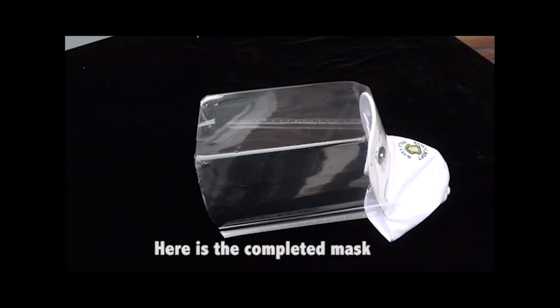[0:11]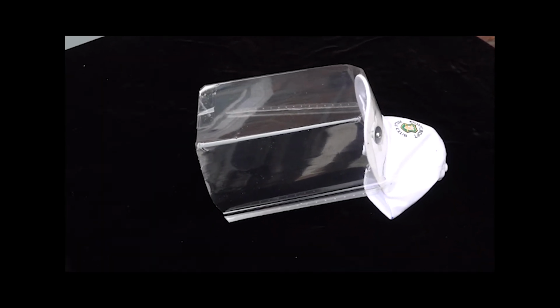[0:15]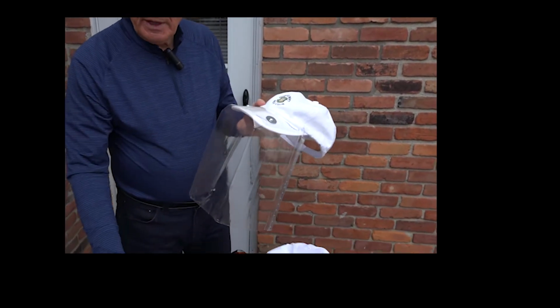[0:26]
Today I'd like to share with you how I made this face shield from a basic product from Costco, which happens to be a spinach box. This is a spinach box, okay?
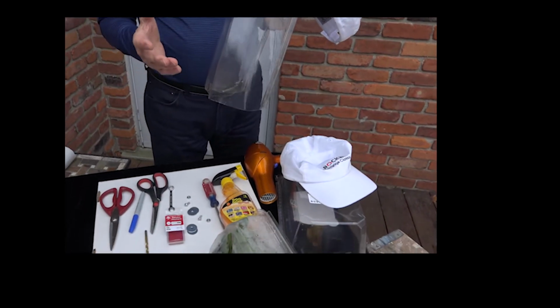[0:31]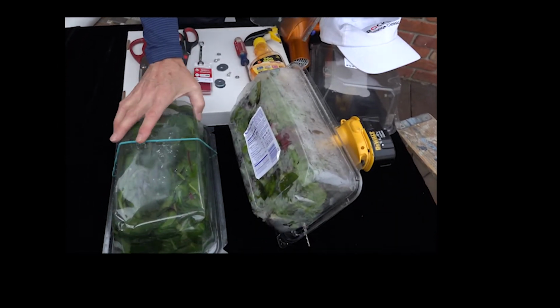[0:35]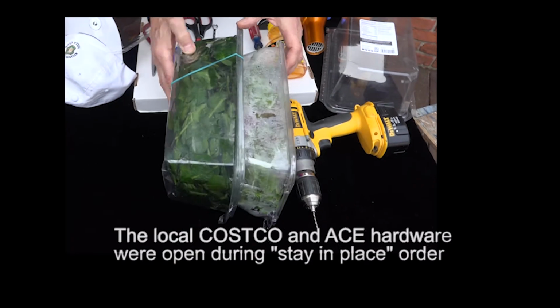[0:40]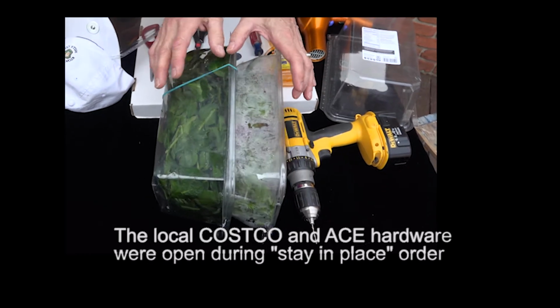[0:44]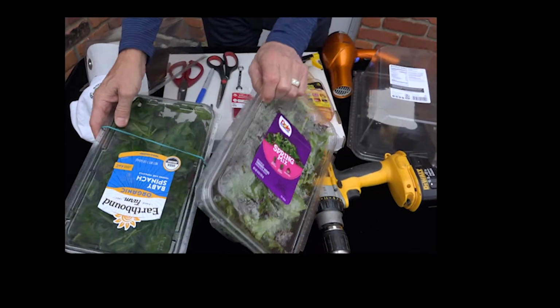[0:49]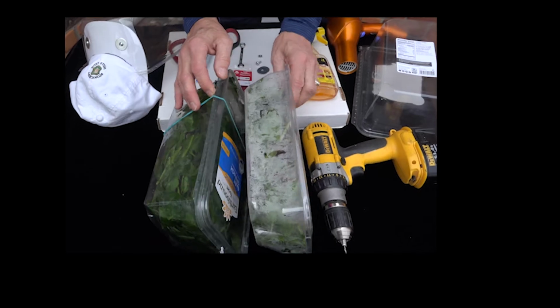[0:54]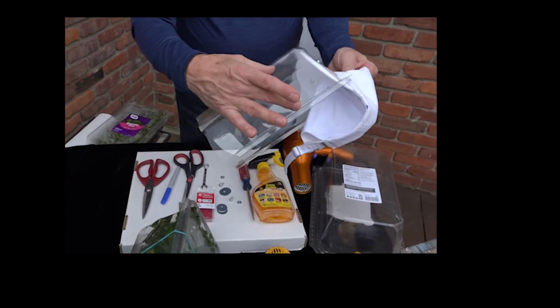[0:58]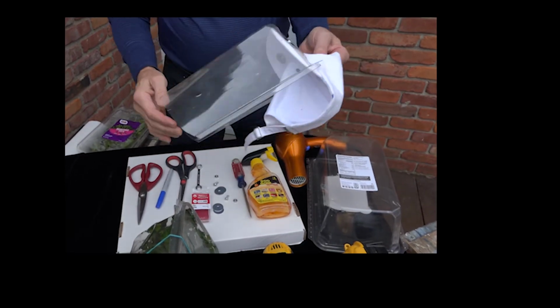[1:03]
Now, when you go to the store to buy the box, what's singly most important is the depth of the box, okay? So we want to get a box that's very, very deep. You do not want a shallow box depth-wise here. You want to get a minimum of 4 to 5 inches on the side profile. So you want to eliminate this. Even though the top profiles look the same, the side profile is what's most important. So we'll eliminate this because it is this part that's also very, very important. We want to get this close to back to the ear as possible.
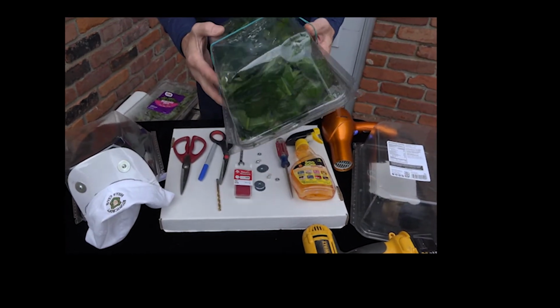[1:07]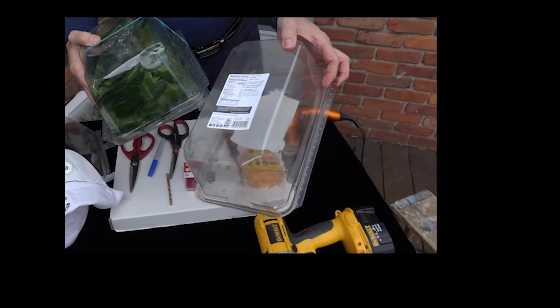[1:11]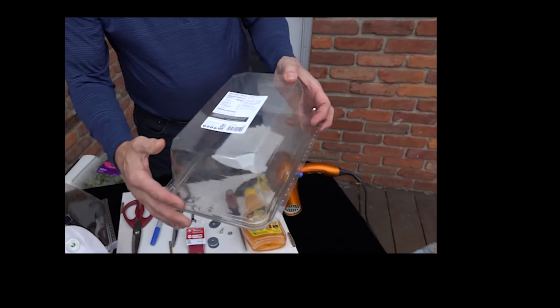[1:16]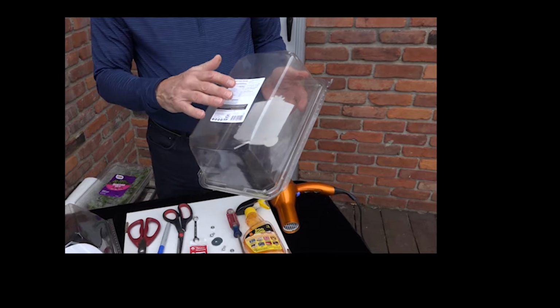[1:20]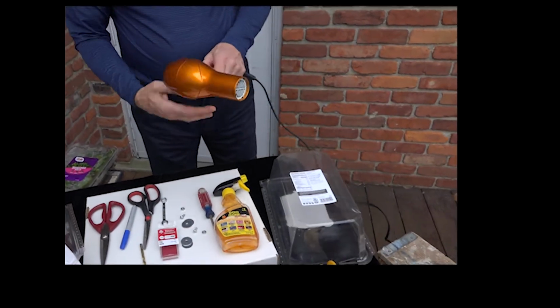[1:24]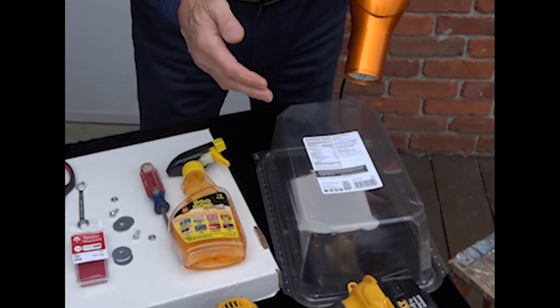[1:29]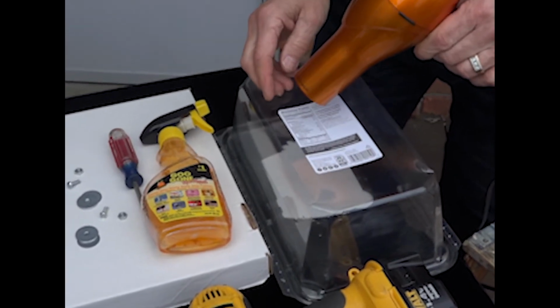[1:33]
So once we have this box, the first step is going to be removing the label that's on the back, okay? This is very, very critical. This is the really most important thing to do, and you have to be very careful to not scratch it. Because if you scratch it, obviously you've ruined the whole process. So it's very simple to do. You take a hair dryer and you heat one of the corners up. And you pull it away.
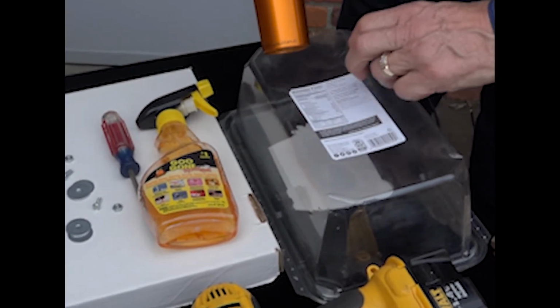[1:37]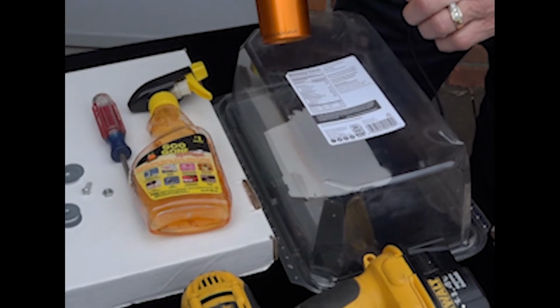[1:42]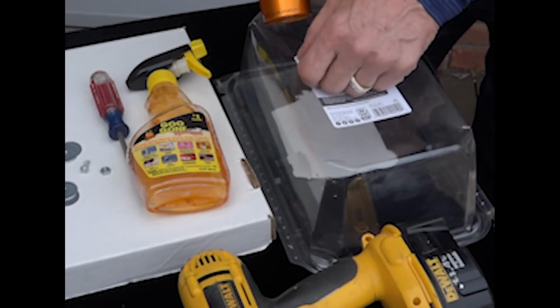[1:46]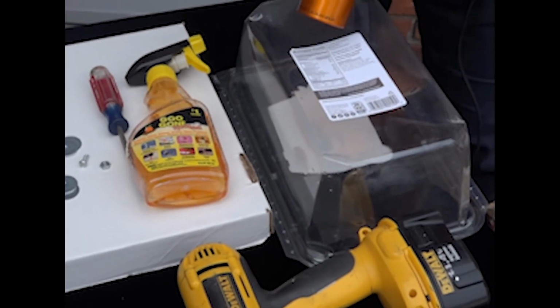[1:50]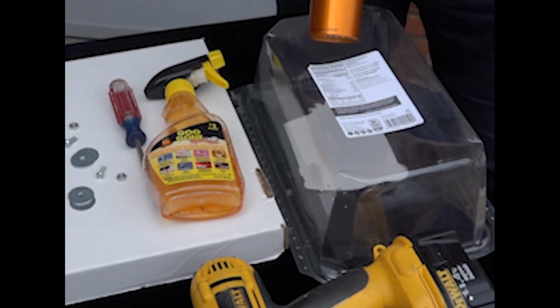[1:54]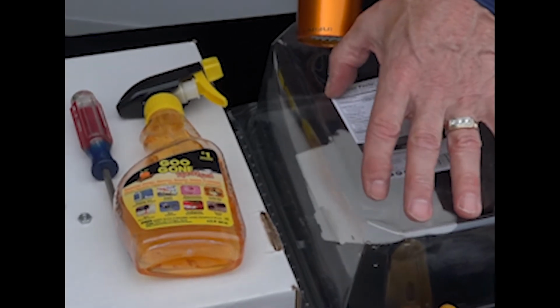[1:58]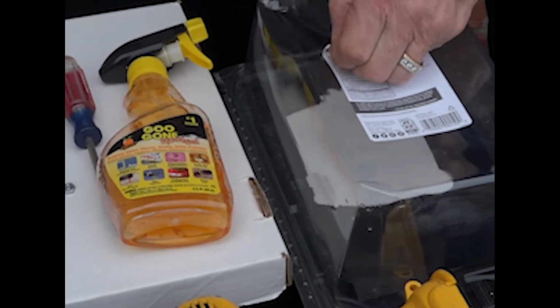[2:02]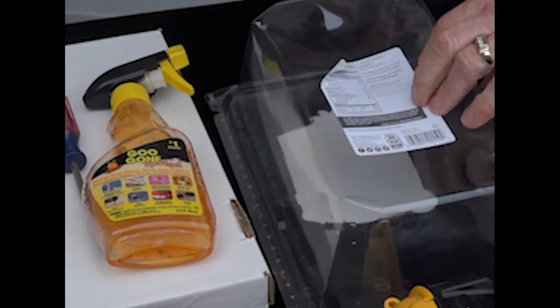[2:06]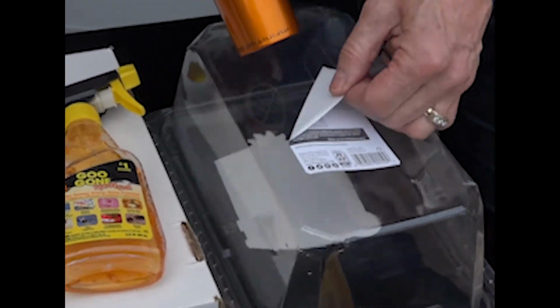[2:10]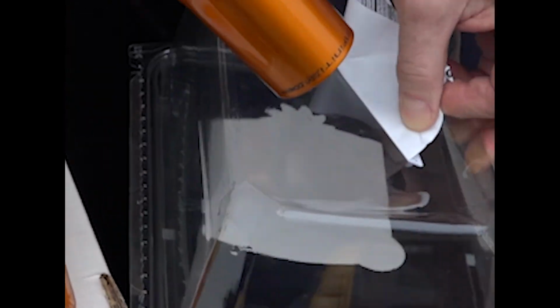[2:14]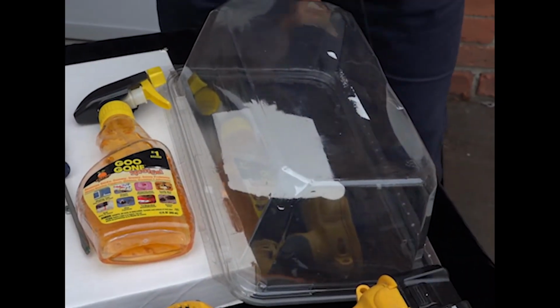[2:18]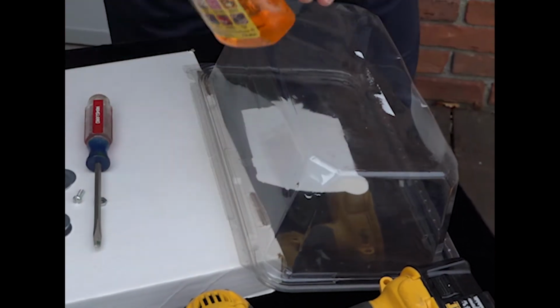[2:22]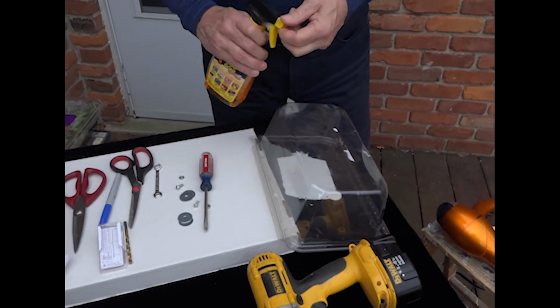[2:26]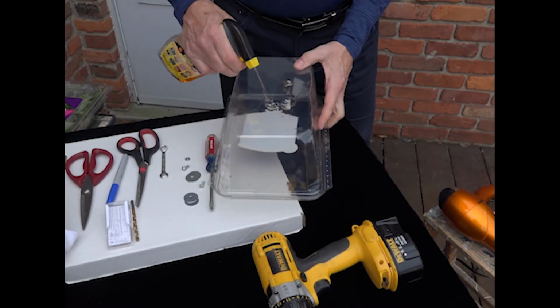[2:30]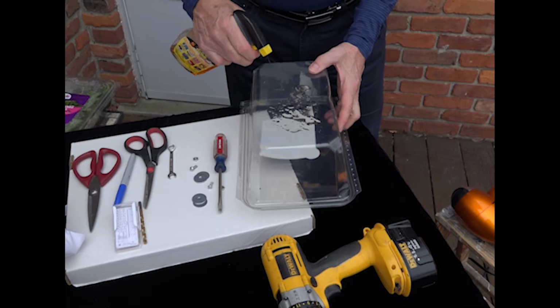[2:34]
It may take a minute before it starts to come off. You do not want to have it on high heat, have it on medium heat. So as you can see, it starts to come out, okay? And you want to take this off. So now there may be some excessive stuff that did not come off. I just used some Goo Gone, spray it on, let it sit for a minute or two, go back over the whole area to make sure you got all the glue off.
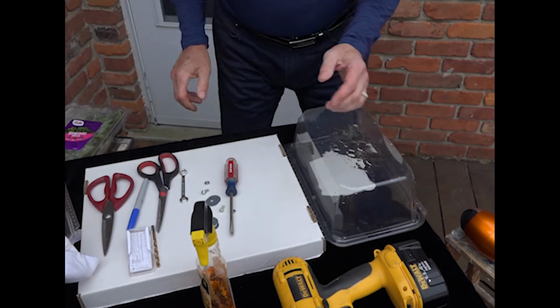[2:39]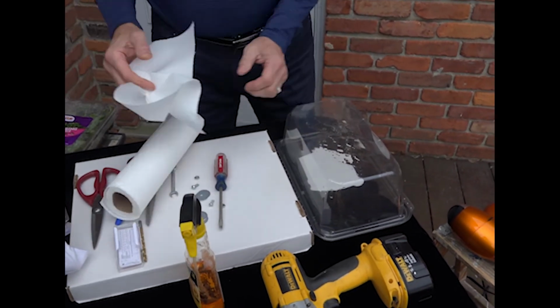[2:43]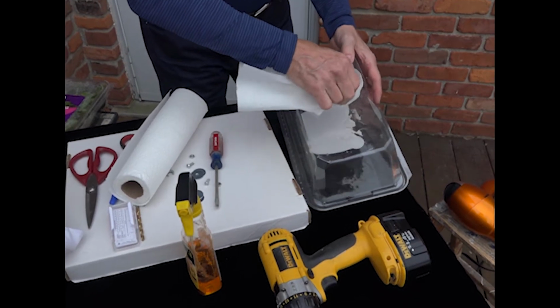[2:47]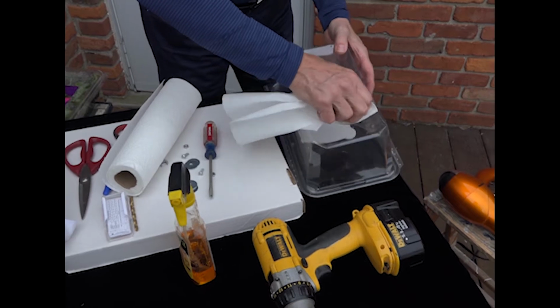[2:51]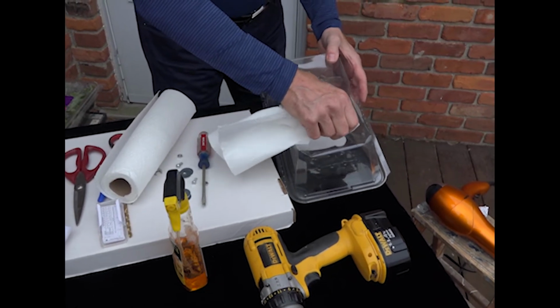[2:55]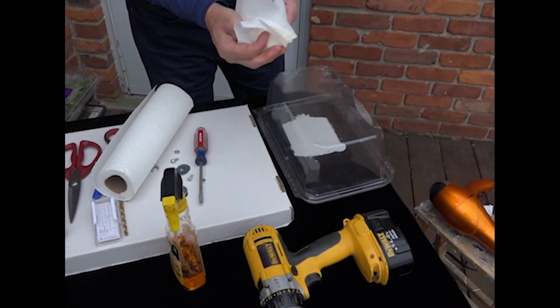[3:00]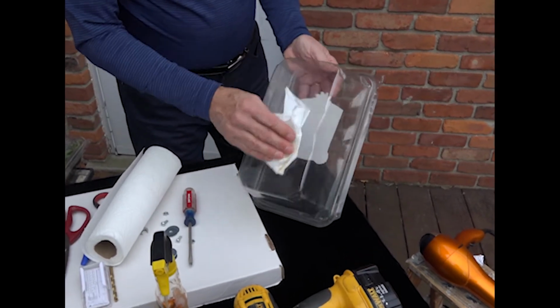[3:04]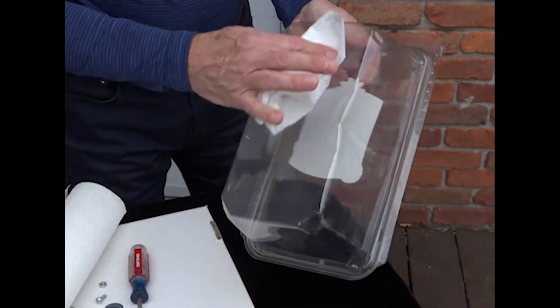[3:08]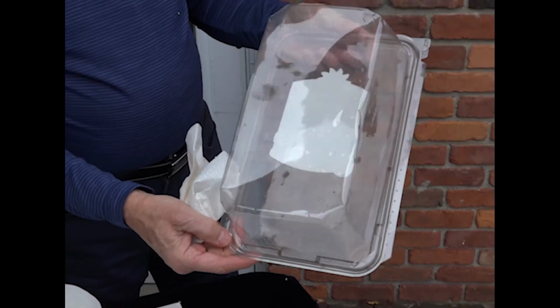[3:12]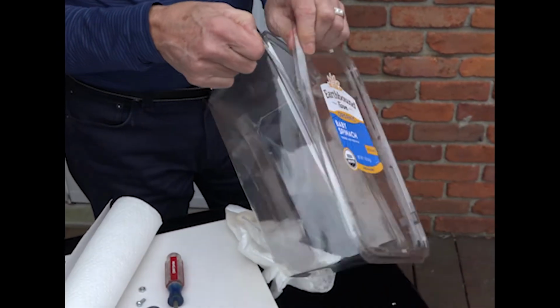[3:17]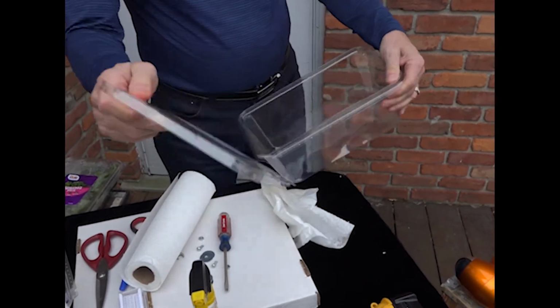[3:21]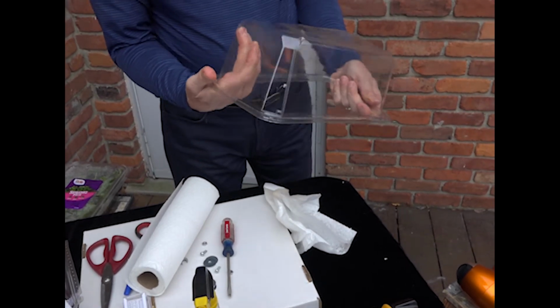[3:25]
Take a paper towel, rub this down, take your fingernail, remove what's there, the excess. The glue is still going to be there in some cases, and the Goo Gone will help it. This is the single most important part, because without this, you're going to scratch it, and you do not want to scratch it, okay? So as you can see, there are no scratches in this. It'll be very, very good to use. Now, you just take the unit apart, discard that. Now we have the beginning stages of our shield.
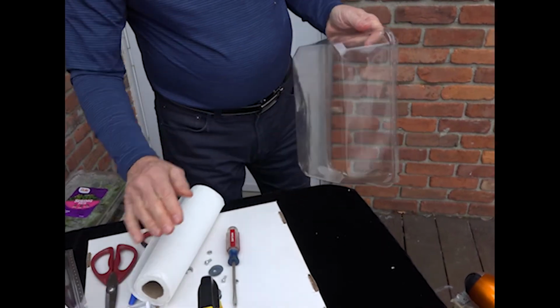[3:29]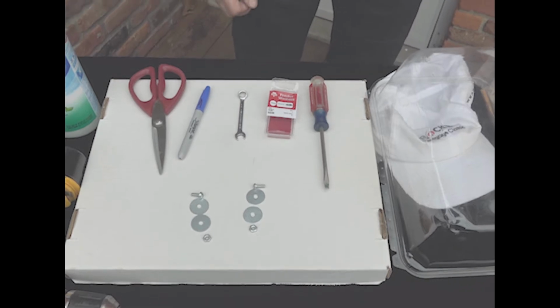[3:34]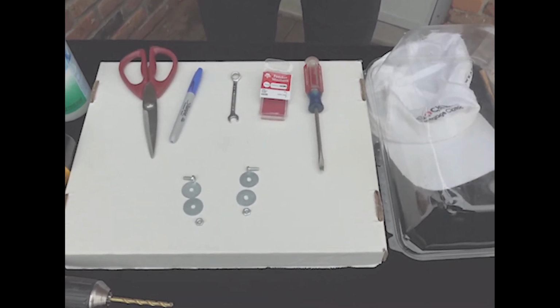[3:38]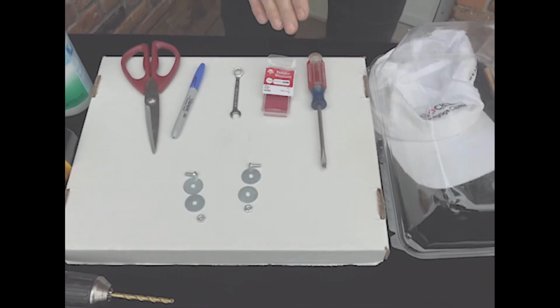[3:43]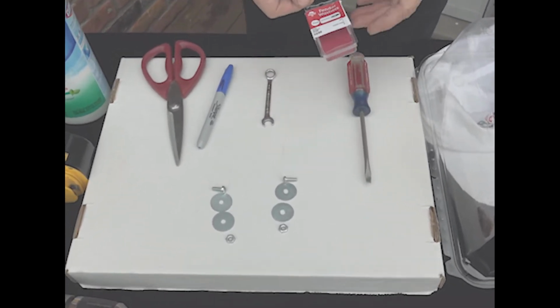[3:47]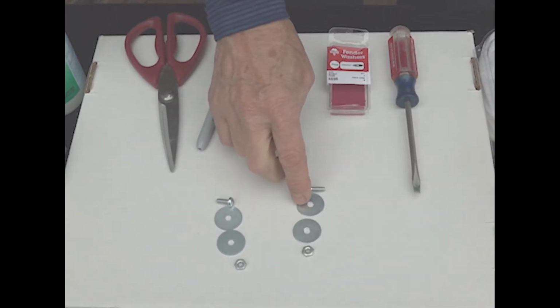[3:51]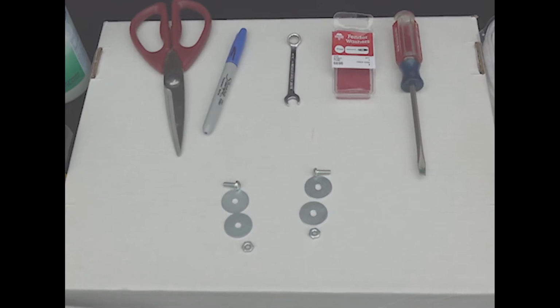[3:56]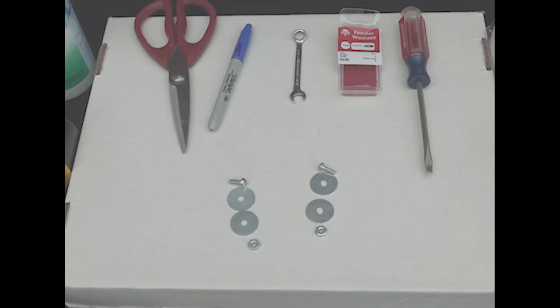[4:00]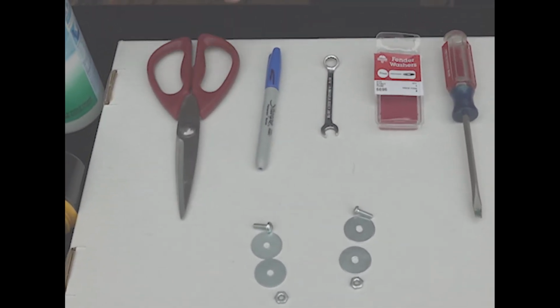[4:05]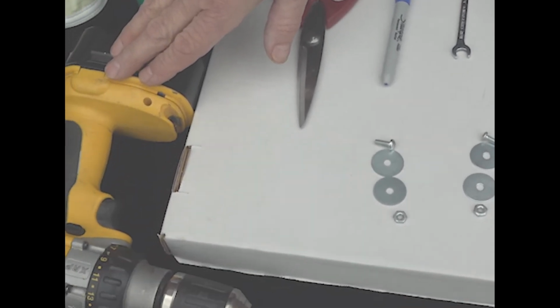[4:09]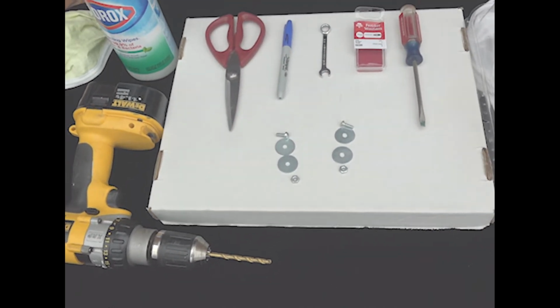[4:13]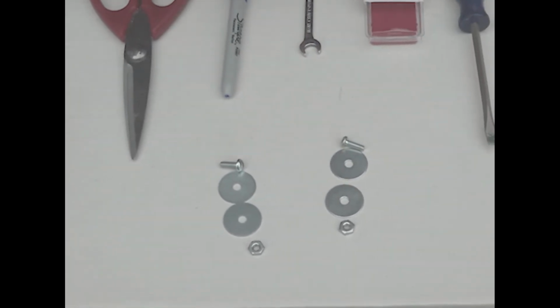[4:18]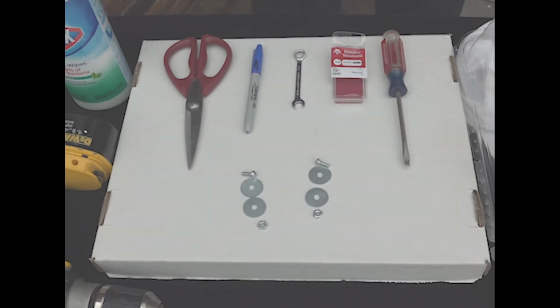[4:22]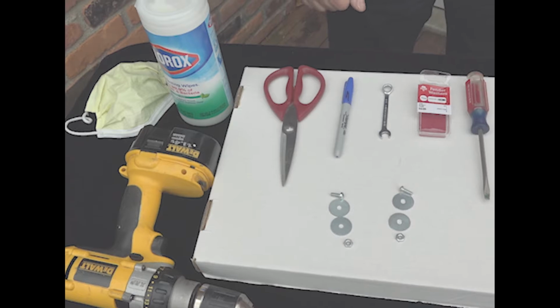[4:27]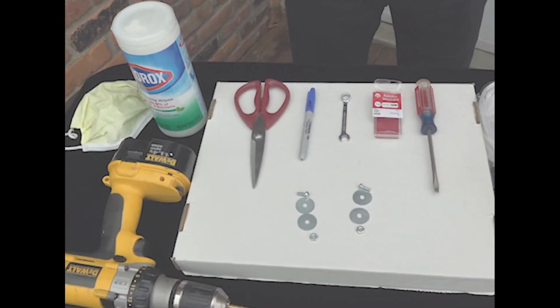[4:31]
The next step is going to be that of attaching the hat to the plastic tray. But before we do that, these are the simple tools that I used. One, a screwdriver. Two, I did go up to Ace Hardware and buy these fender washers, okay, that are very, very wide, and that's important because what's on the top where the plastic is, you don't want to tear the plastic, so this should help protect the plastic so you get a lot of useful life out of it. A simple wrench, a magic marker, a pair of scissors, a drill with a drill bit. The screws here happen to be 3/8 of an inch, 3/16, but you can use any size that you want. But again, the single most important part is using these fender washers in my mind. Later on we'll explain a little about the Clorox, and we'll talk a little bit about the mask that will accompany it. These are the things that you'll need to attach the hat to the plastic box.
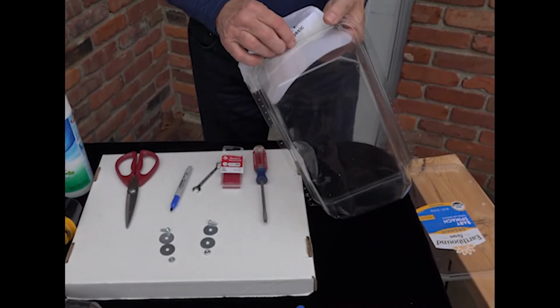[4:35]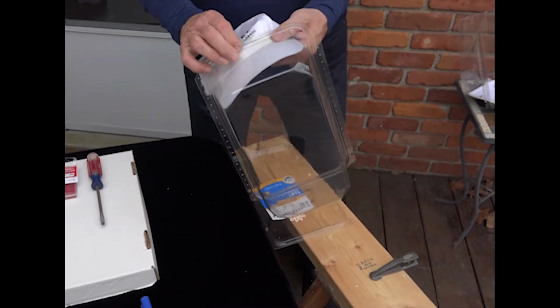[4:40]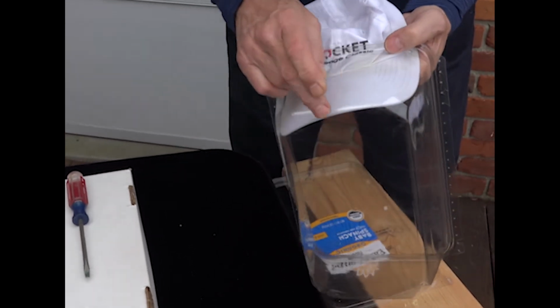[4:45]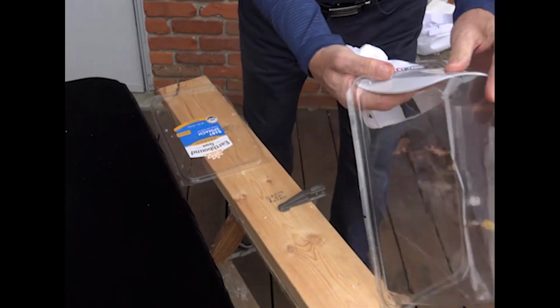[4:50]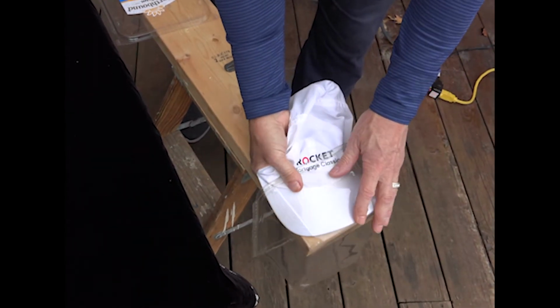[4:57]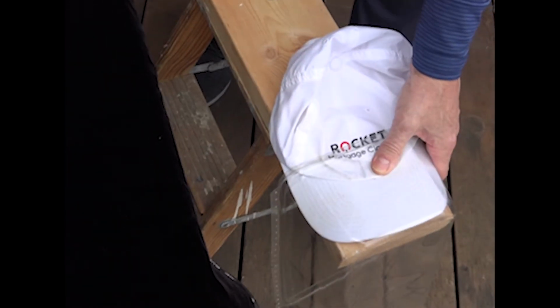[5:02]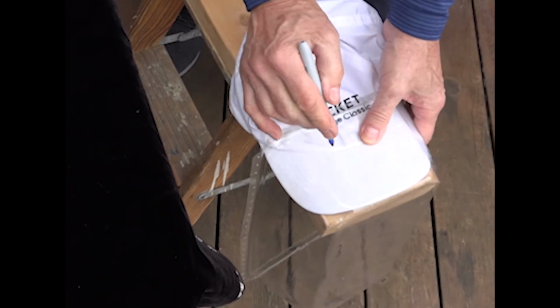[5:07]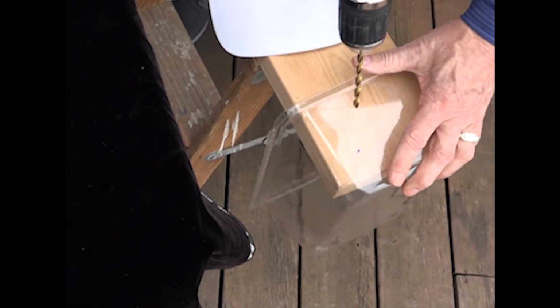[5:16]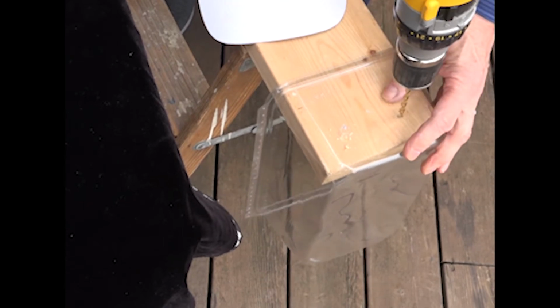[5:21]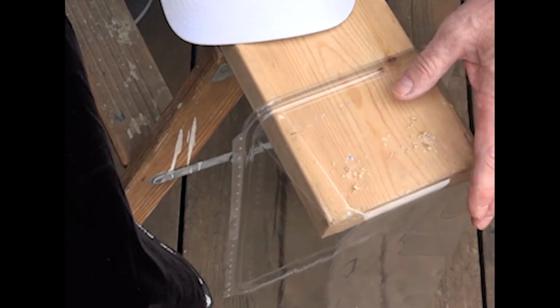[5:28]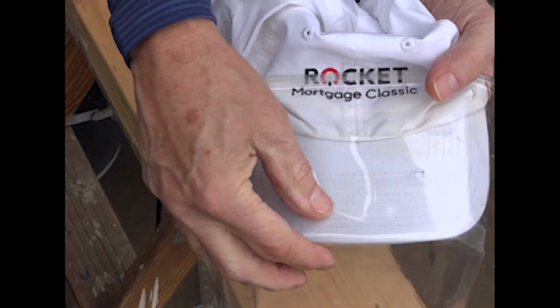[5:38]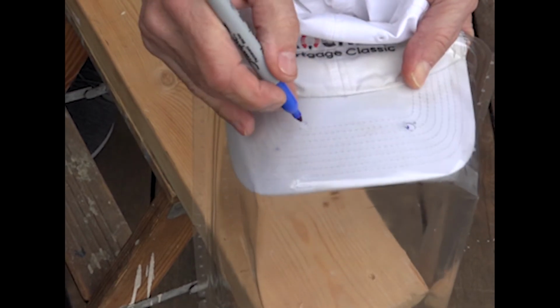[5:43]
So now we're ready to attach the hat to the plastic box. What we need to do, and the single most important part here, is you must make sure that the brim of the hat is touching the back of the box. Once you determine that, okay, you then want to either get a 2x4, or I happen to use a 2x8. And now I'm going to take the hat and the box, press them down real hard, making sure the bill is at the end. And I'm going to take a magic marker and mark where I want the drill holes to be. Now that I've accomplished that, I will take my drill. Once I've accomplished that, I now will put the hat back on, make sure the bill is all the way touching again, make sure it's lined up and it's square in there. Now take the magic marker, go back over the hat, making sure.
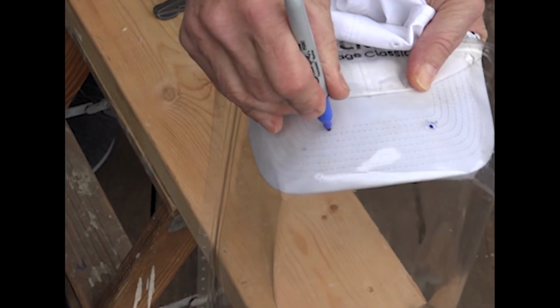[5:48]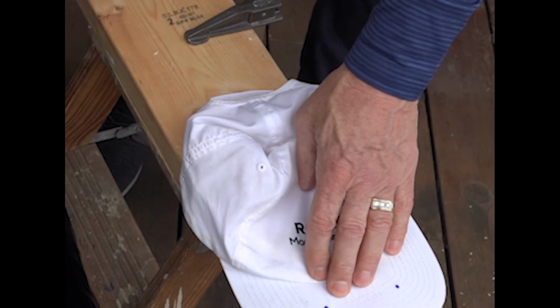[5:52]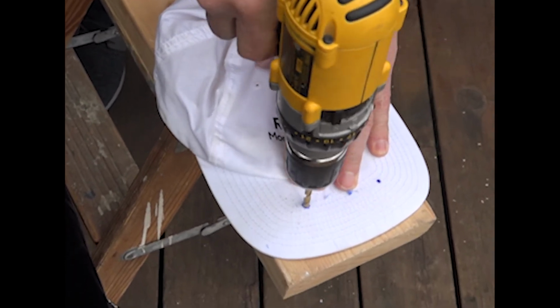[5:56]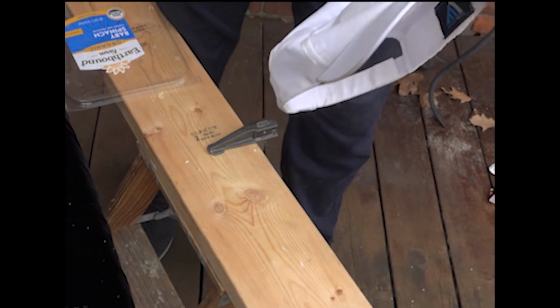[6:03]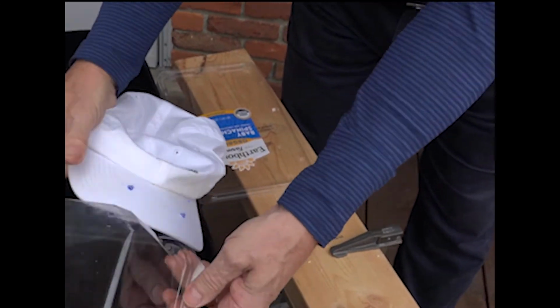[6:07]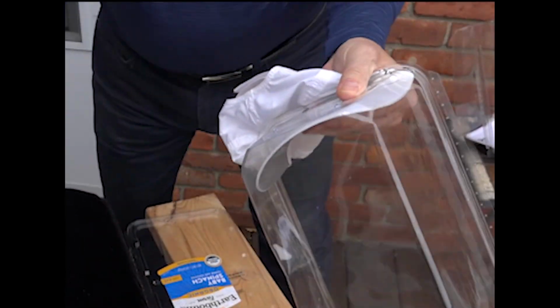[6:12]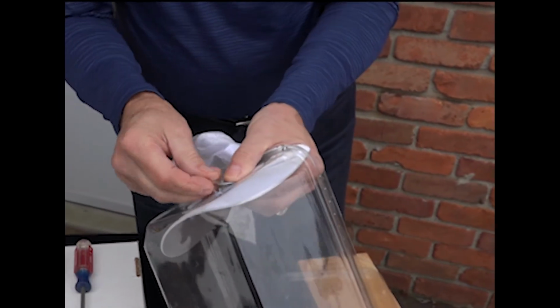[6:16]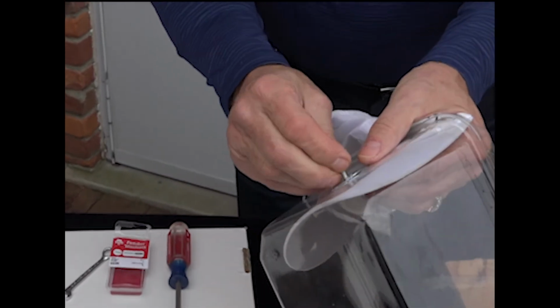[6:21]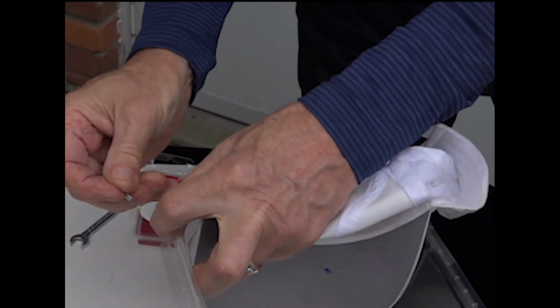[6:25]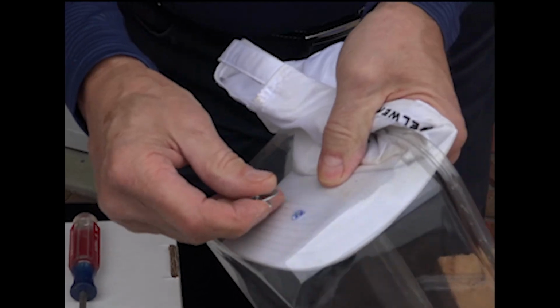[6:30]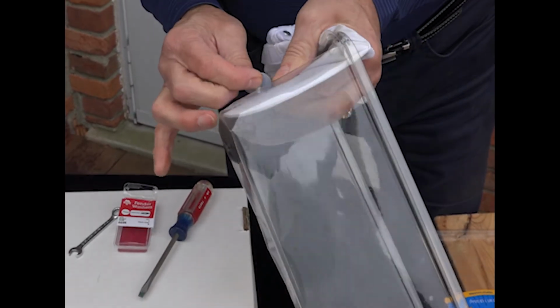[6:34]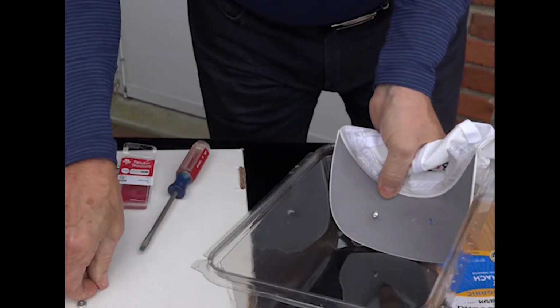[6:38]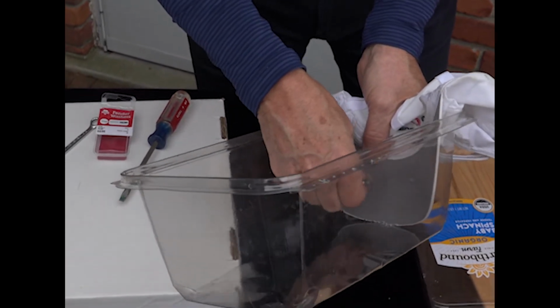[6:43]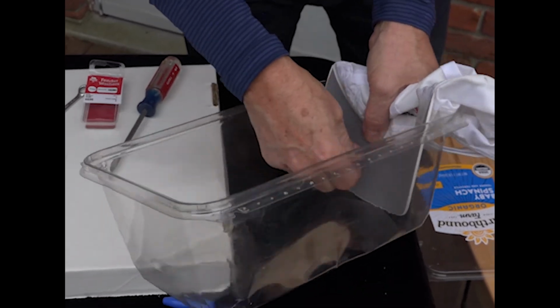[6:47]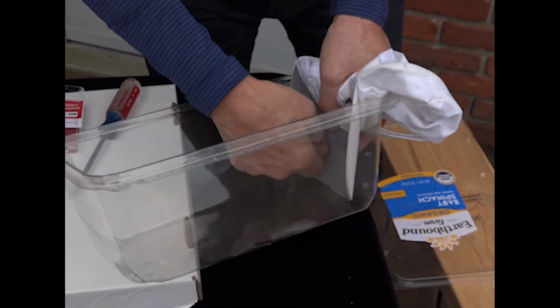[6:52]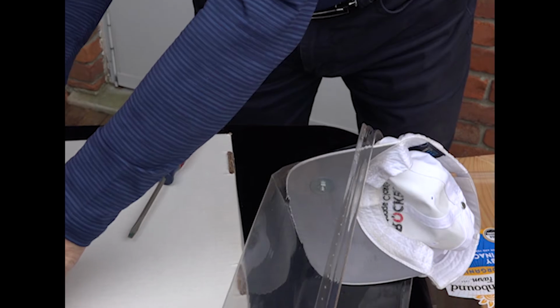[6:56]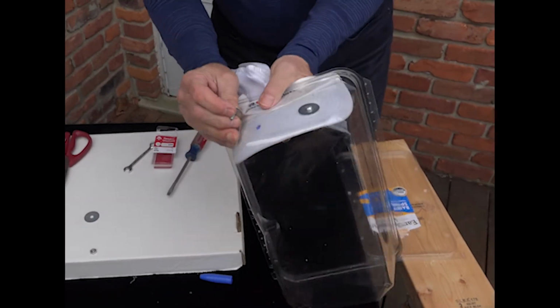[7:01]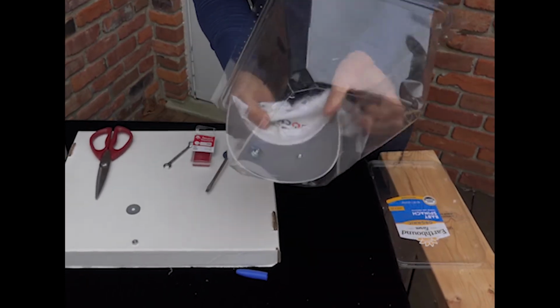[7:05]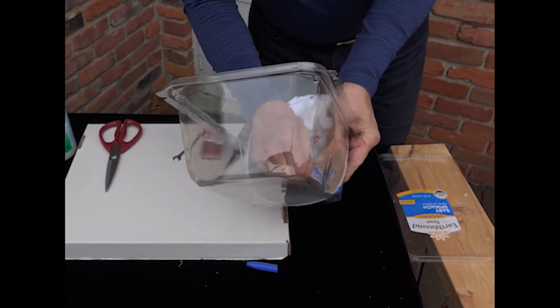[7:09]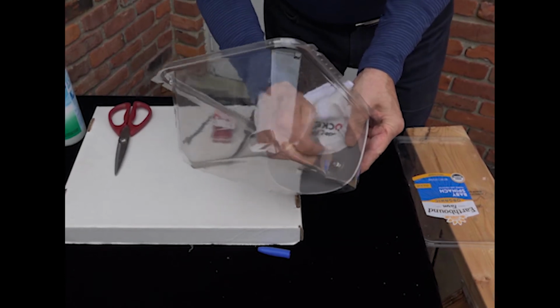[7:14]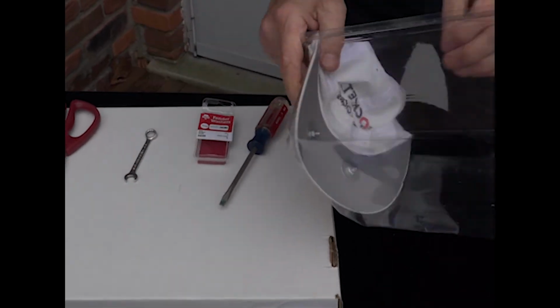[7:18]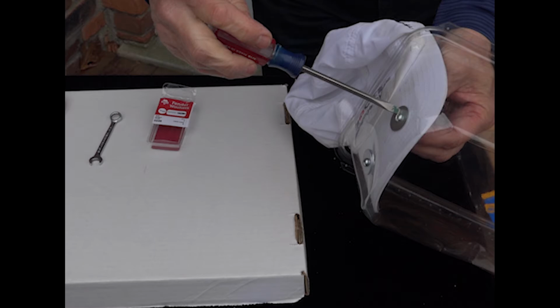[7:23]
Okay, now that I've done that, I take the hat, now I'm ready to attach the hat. So now I take the screw along with the washer, and put it into the first hole. Turn it upside down, put the washer on the tray, put my nut on, tighten it down a bit. Now take my other washer and screw, put them on. Now put it into the second hole. Put the screw in the nut. Tighten it down. If you want, you can use the wrench, but you can also just tighten it with the screwdriver.
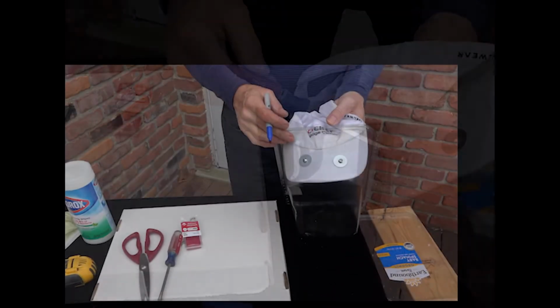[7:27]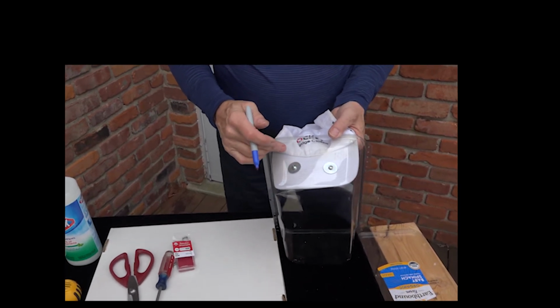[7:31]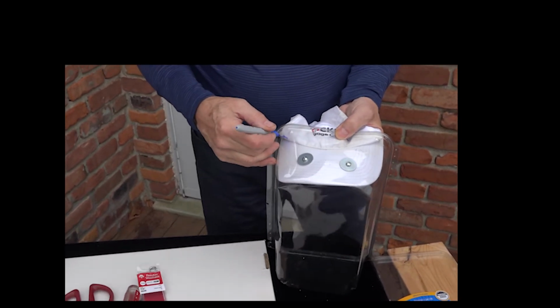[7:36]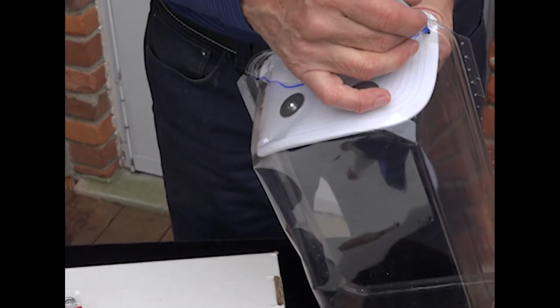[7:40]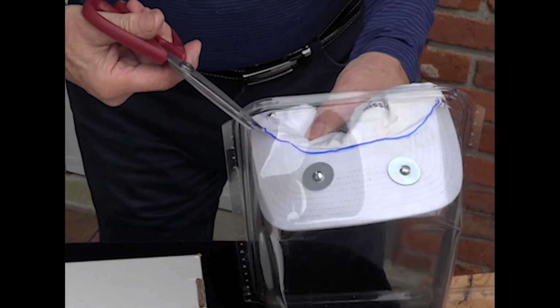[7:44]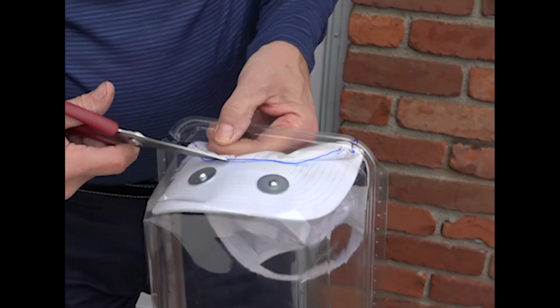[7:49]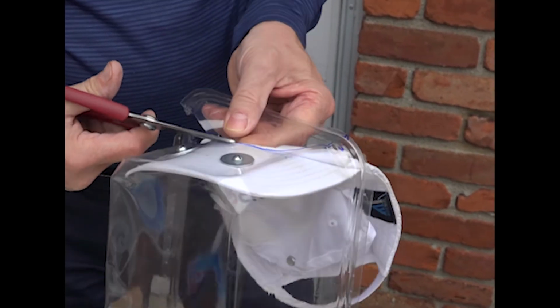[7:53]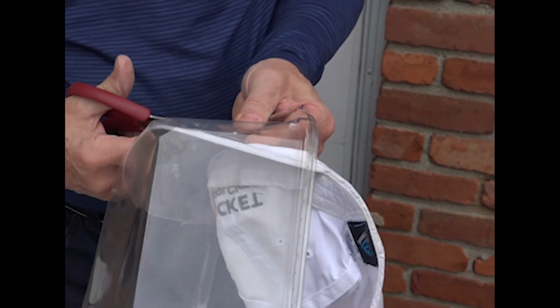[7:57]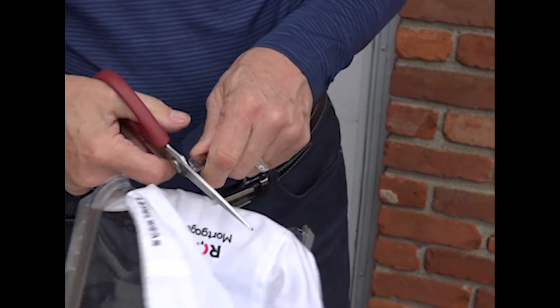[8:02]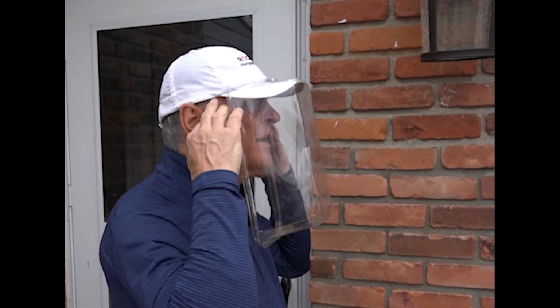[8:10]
So our next step is now to cut the plastic box so it fits to the hat. So we just take our magic marker, and cut. Now we just take our scissors and now we have the hat ready to be worn. See how the side profile is good?
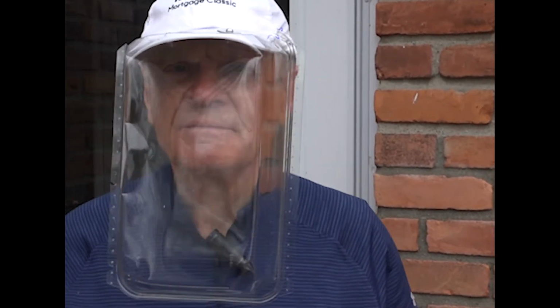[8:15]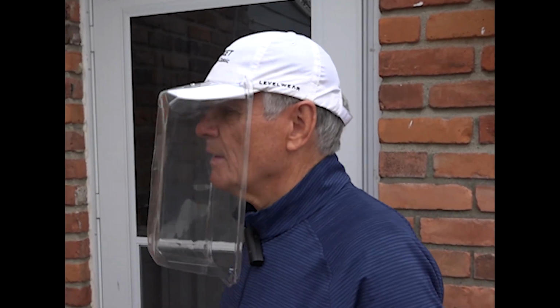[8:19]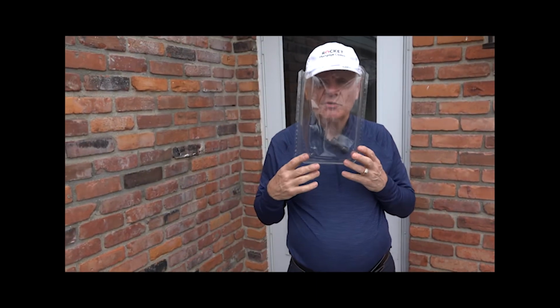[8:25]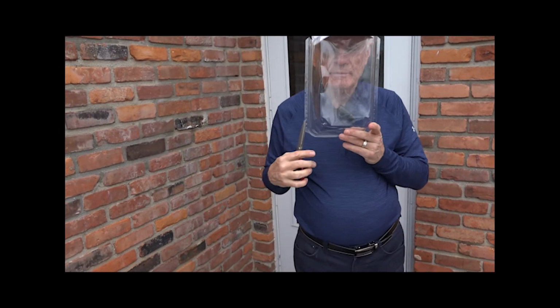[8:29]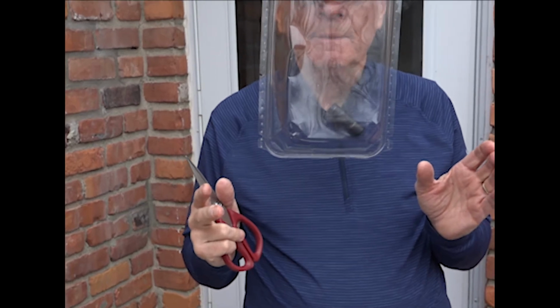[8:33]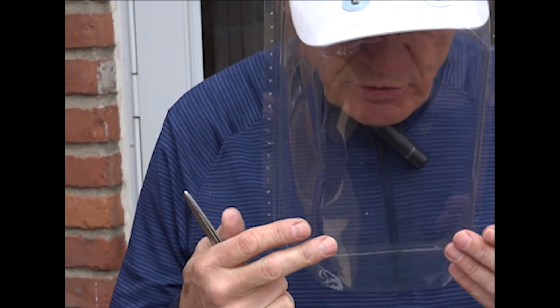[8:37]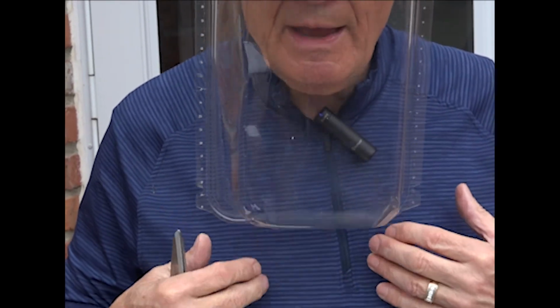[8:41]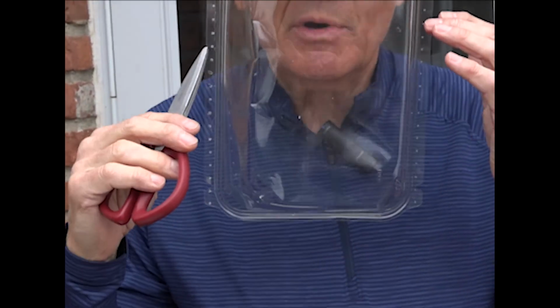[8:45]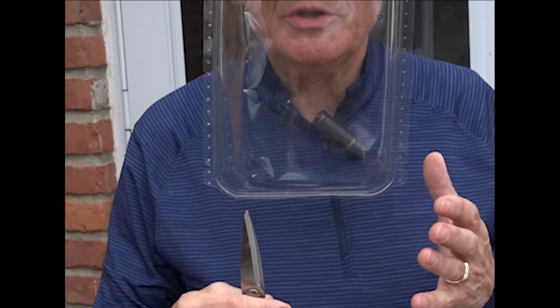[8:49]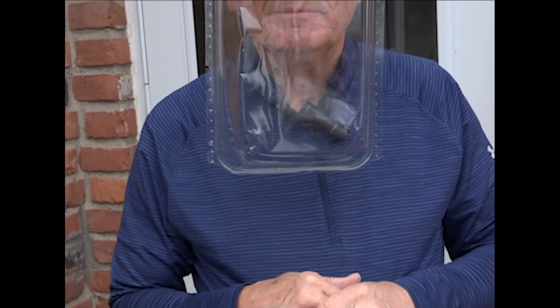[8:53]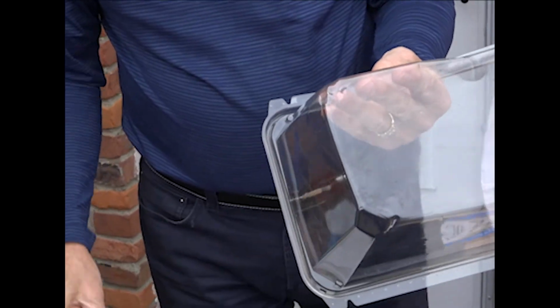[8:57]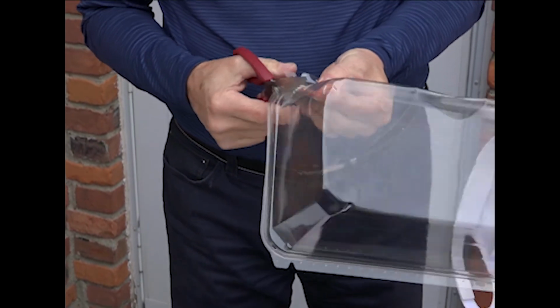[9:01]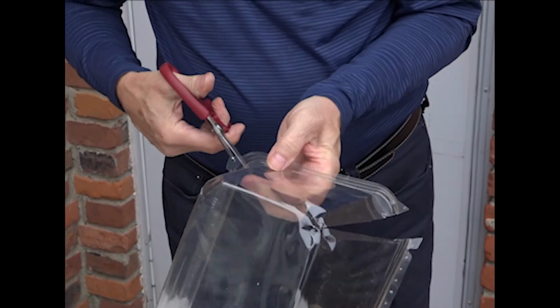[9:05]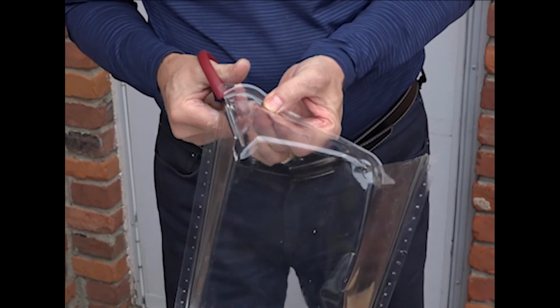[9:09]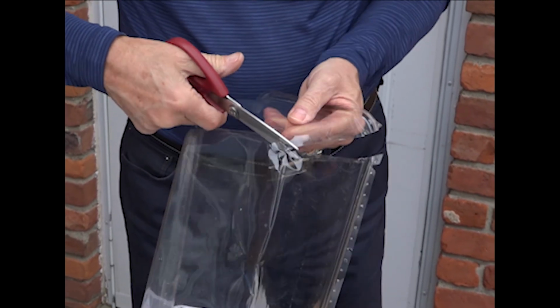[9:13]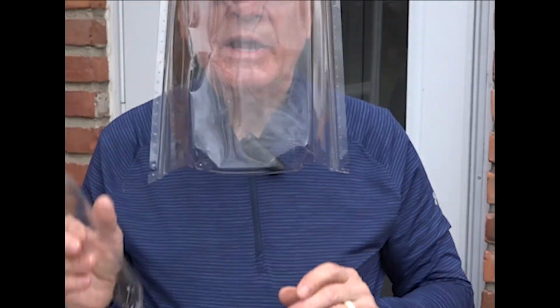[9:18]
The last step is going to be now to cut the bottom. My suggestion is to cut as little off as possible, and as time goes on, cut it to the need you need. You'll find when you bend your head down that the bottom might hit your chest. If that happens, then cut it back a little bit. But do not just cut it in one big sweep. Cut it starting very small at the bottom and figure out what you need, okay? Now, let's do that next, okay? So we'll take the hat off, and basically we're just going to cut. So now you have an open bottom, okay?
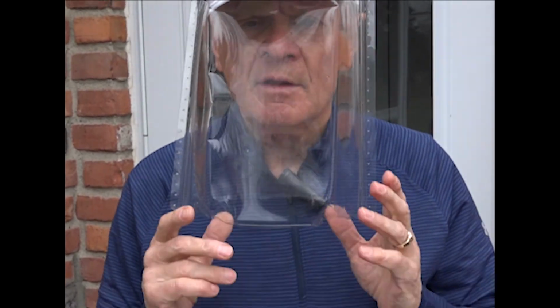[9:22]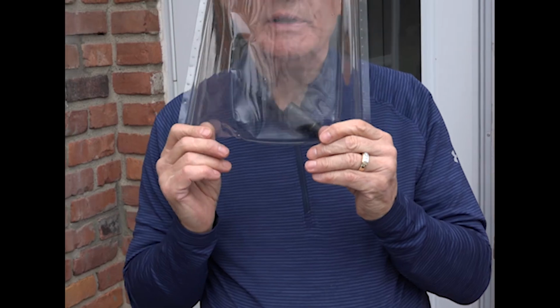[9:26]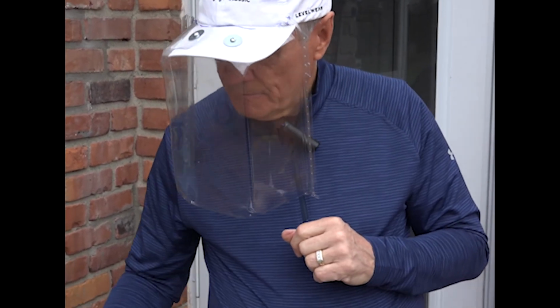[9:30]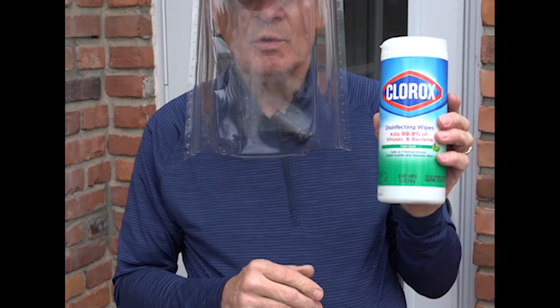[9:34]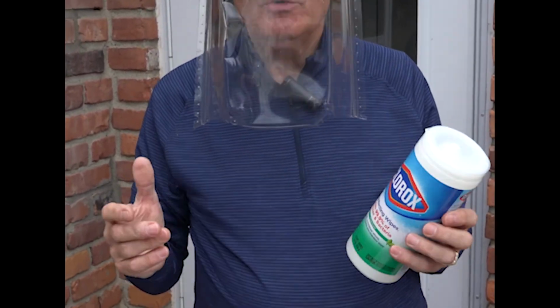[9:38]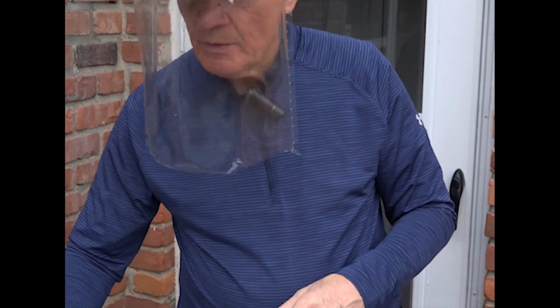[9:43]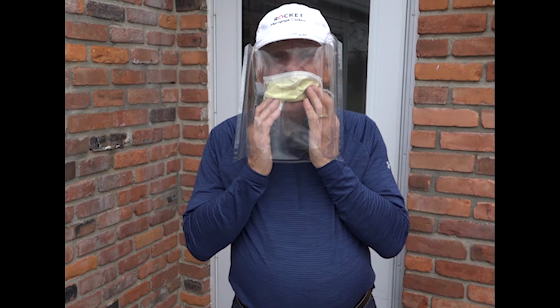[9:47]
Now, if you want, you can even take some Scotch tape and just tape this for extra protection, just so it doesn't crack or tear. And when we're done with the whole thing, you can wash it or clean it with the Clorox or any other sanitizer, okay? And when you go out into public, you can clean it off when you come back home. You'll also be able to wear a mask, okay? And you should be able to use this.
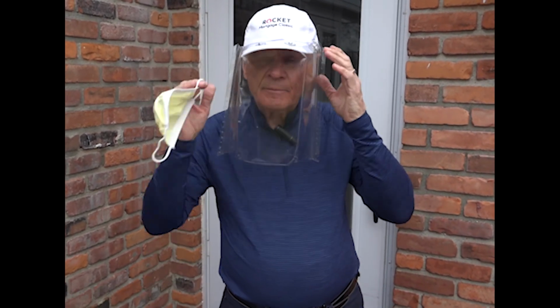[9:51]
Please do one thing. Provide a lot of common sense when you do this. This is not FDA approved. This is something I came up with. But it's very practical. It's very helpful. And you want to be able to use, again, the common sense and clean it, use it, and make more for your friends and family.